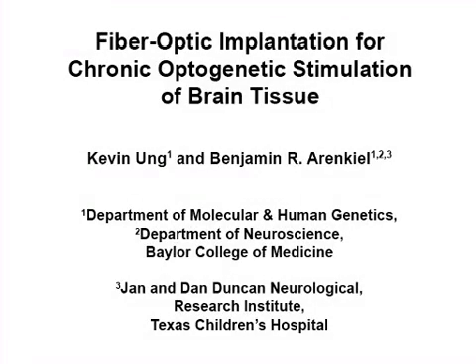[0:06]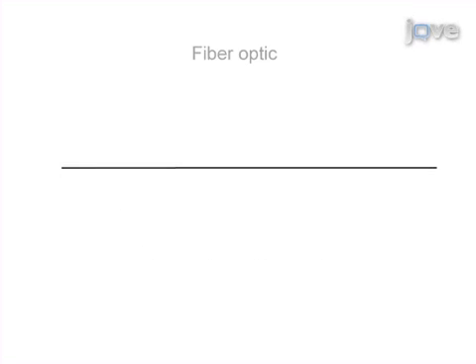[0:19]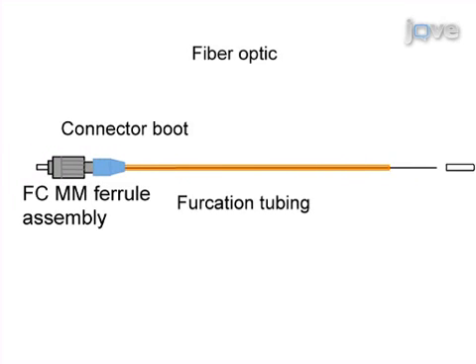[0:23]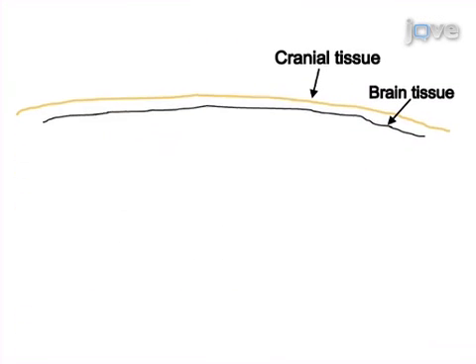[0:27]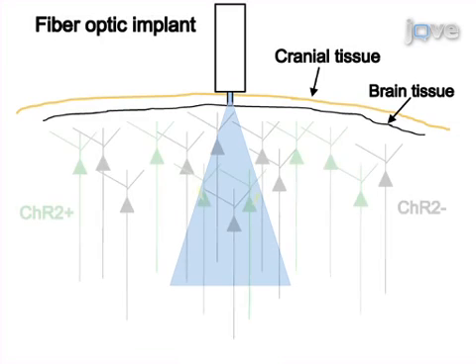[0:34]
The aim of the following experiment is to activate and study neuronal circuits long-term in awake, behaving mice. This method is adapted from the concept originally described in Sparta et al. This is achieved by first assembling a fibre optic coupler cord, which connects the optical rotary joint to the fibre optic implant. Next, the fibre optic is implanted over the brain tissue of interest to create a passage for the light to travel directly to the channel rhodopsin-expressing neurons.
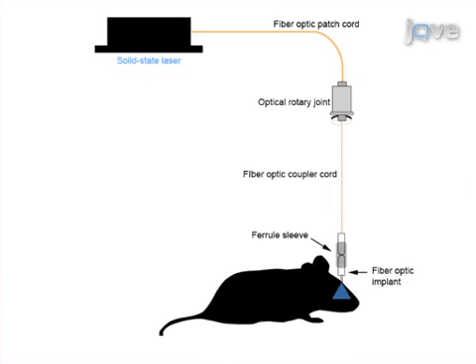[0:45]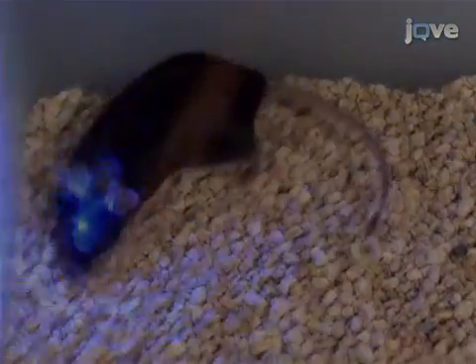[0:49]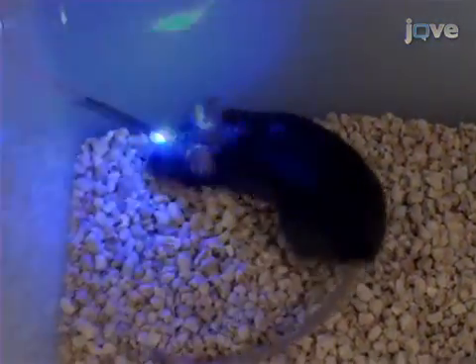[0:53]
Finally, the light source is connected to the optical rotary joint in order to create a serially connected path from the light source to the brain tissue. Ultimately, light-induced firing of channel rhodopsin-expressing neurons can be evaluated based on in vivo electrophysiology and behavioral studies.
The main advantage of this technique over existing methods, like guide cannulas, is that it minimizes the damage to the brain tissue caused by repeated insertion and removal of an optical fiber. Though this method can provide insight into neural circuit function, it can also be applied to other systems to better understand the synapse and circuit-dependent mechanisms that underlie certain types of neurological disorders.
Visual demonstration of this method is critical, as the implantation steps are difficult to master. Each seemingly minor step contributes greatly to the overall stability and reliability of the method.
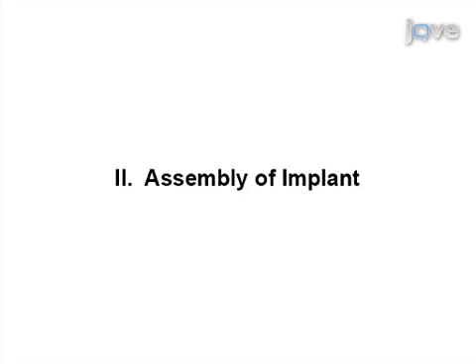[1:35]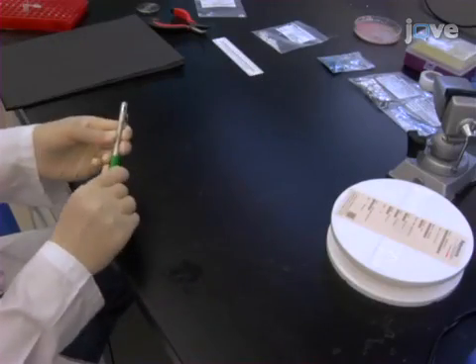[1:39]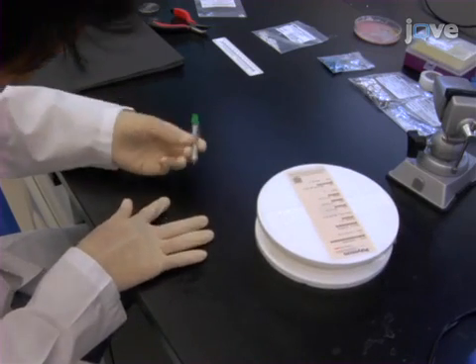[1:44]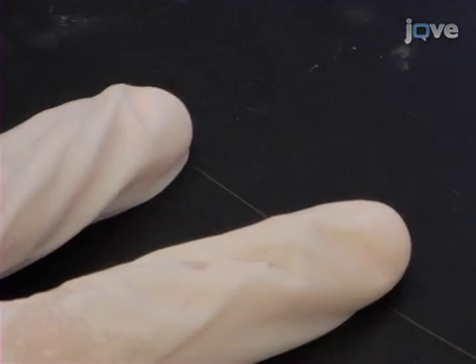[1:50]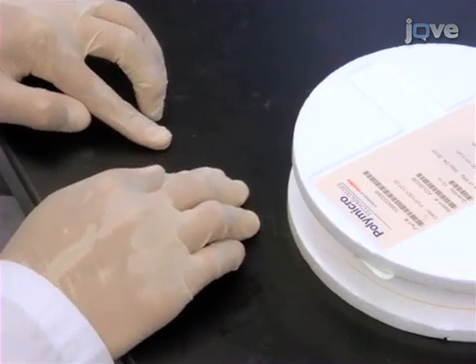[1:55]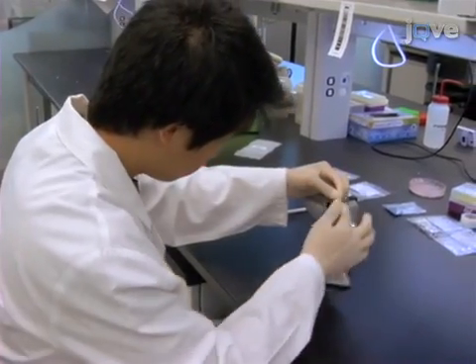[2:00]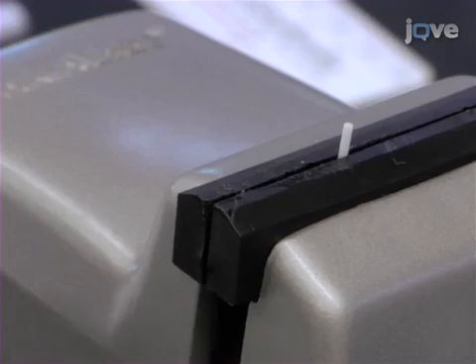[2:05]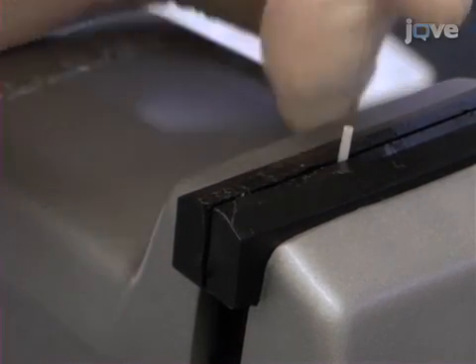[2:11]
Begin by cutting 35 mm of a 125 micron diameter fibre optic with a 100 micron core by positioning a wedge tip carbide scribe perpendicular to the fibre optic and scoring the fibre in a single unidirectional motion, followed by pulling straight out. Now insert an LC ceramic ferrule with a 127 micron inner diameter bore, convex side pointed down, into a vise, and then insert the fibre optic piece into the ferrule. The fibre optic should slide in smoothly and marginally protrude beyond the convex end of the ferrule.
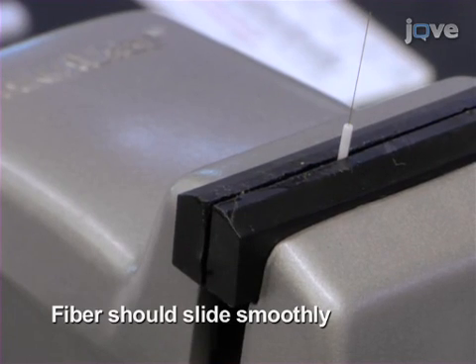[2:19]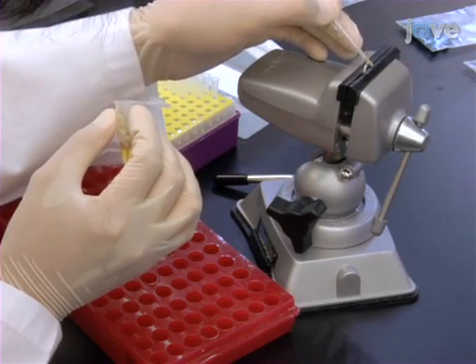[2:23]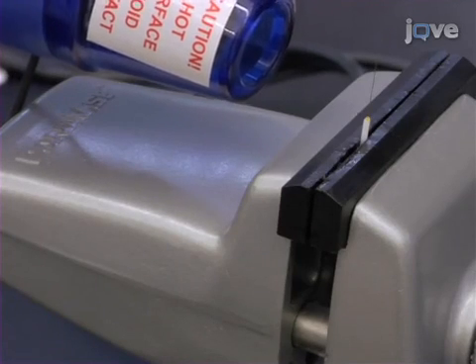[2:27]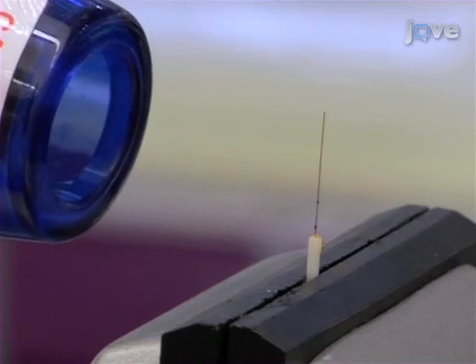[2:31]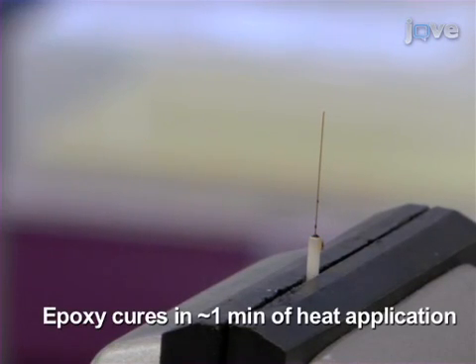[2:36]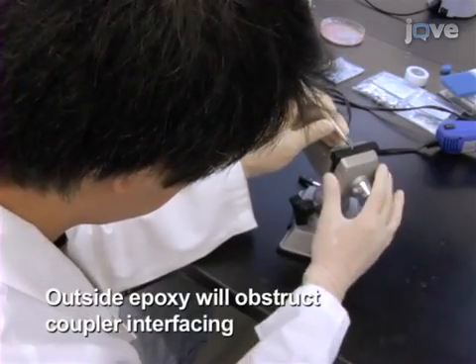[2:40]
Next, apply 1 drop of freshly prepared heat-curable fibre optic epoxy to the flat end of the ferrule, and then apply a heat gun on the epoxy. The epoxy should fill the ferrule as it is heated and is cured when it turns black. After curing, clean any epoxy off the sides of the ferrule.
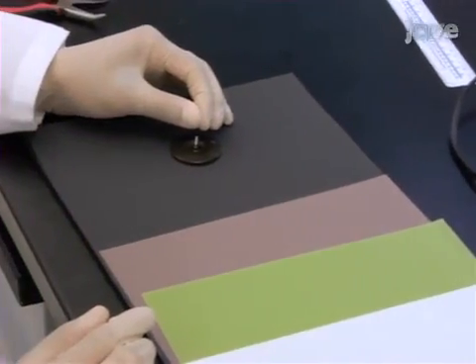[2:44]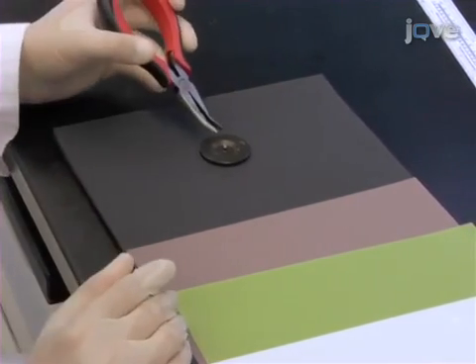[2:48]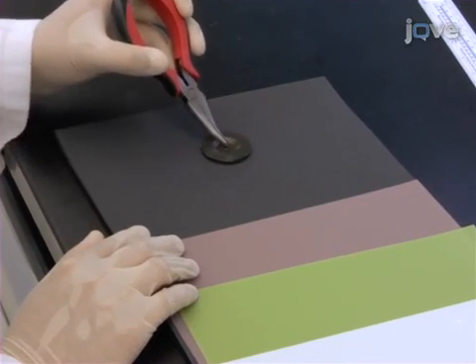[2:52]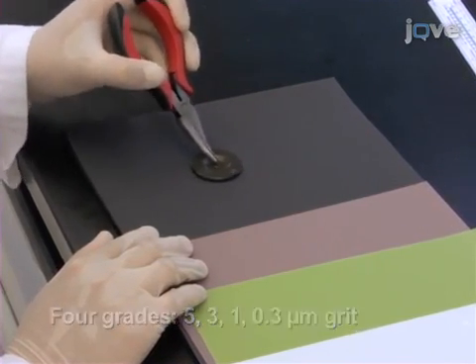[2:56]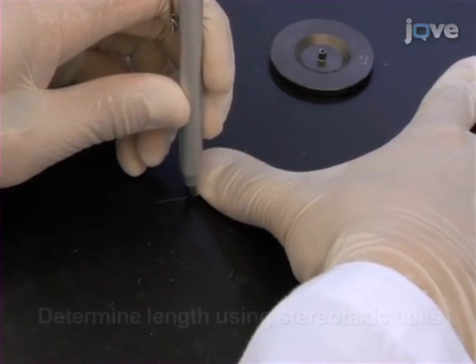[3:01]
Then, using an LC fibre optic polishing disc, make circular rotation patterns to polish the convex end of the ferrule on aluminum oxide polishing sheets on a polishing pad on 4 decreasing grades. Then, cut the fibre optic at the flat end to the appropriate length for targeting the region of interest.
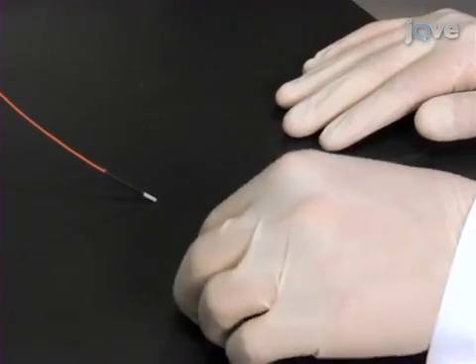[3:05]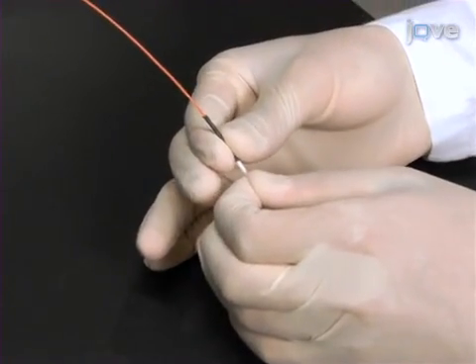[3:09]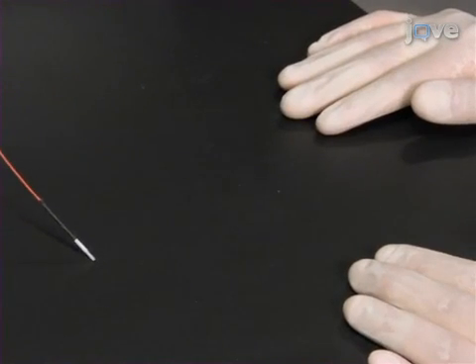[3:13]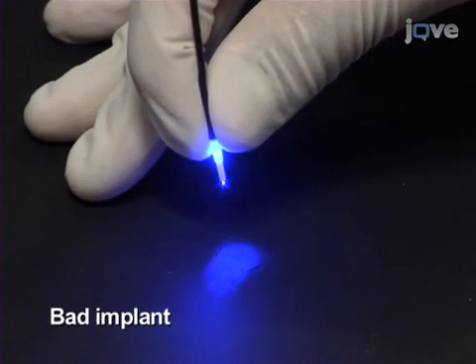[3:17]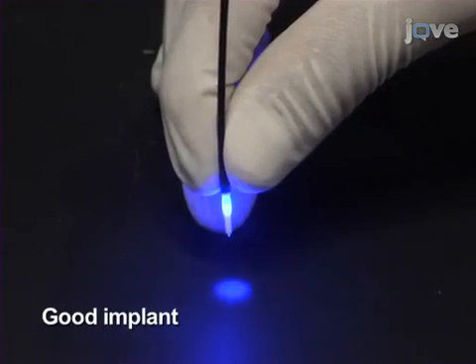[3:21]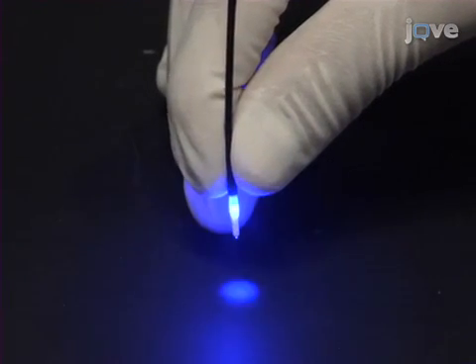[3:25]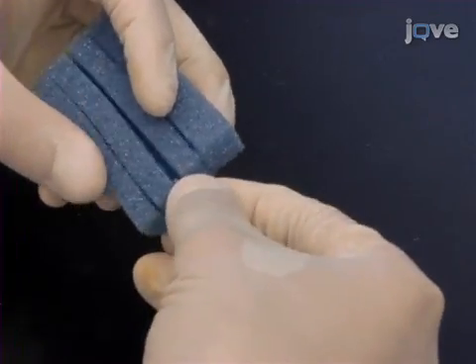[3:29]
To test the polished fibre optic, insert the polished end of the implant into the sleeve of the coupler until direct contact with the opposing ferrule is felt. A bad implant will have a weak focal point near the tip of the fibre optic, whereas a good implant will transmit a smooth concentric circle of light with output powers of up to 10 milliwatts. Store the finished implants in foam until use.
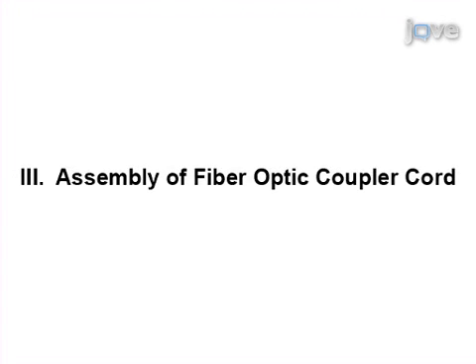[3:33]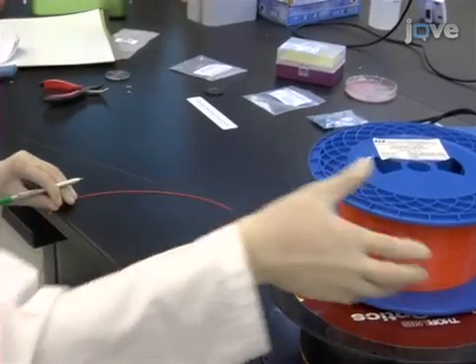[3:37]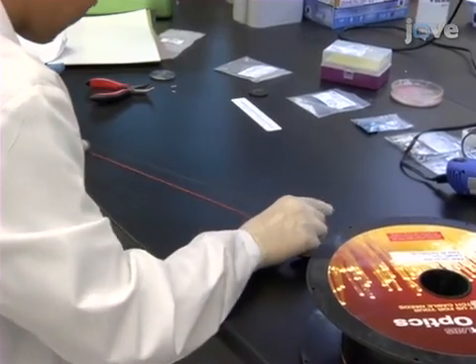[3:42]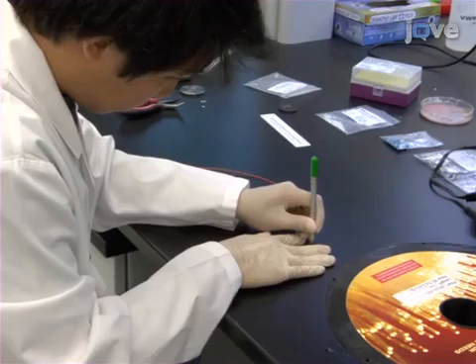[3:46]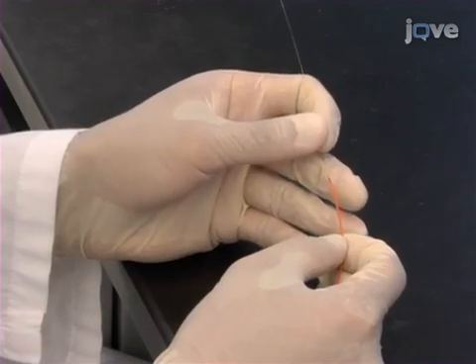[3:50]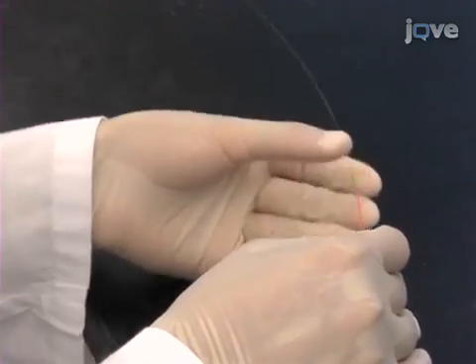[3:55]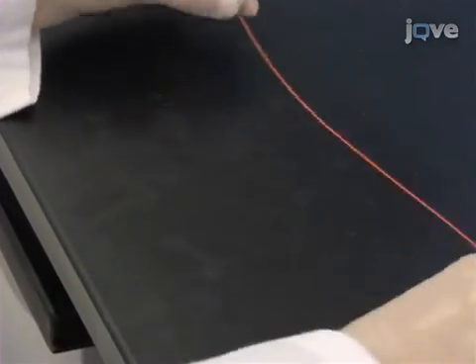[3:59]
Begin this step by measuring and then scoring enough 220 micron diameter fibre optic with a 200 micron core to allow a mouse to move freely, but not allow the mouse to chew the fibre. Then, insert the fibre optic into a piece of furcation tubing with an inner diameter slightly larger and a length slightly shorter than those of the fibre optic.
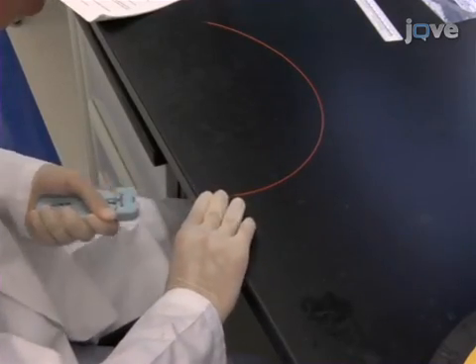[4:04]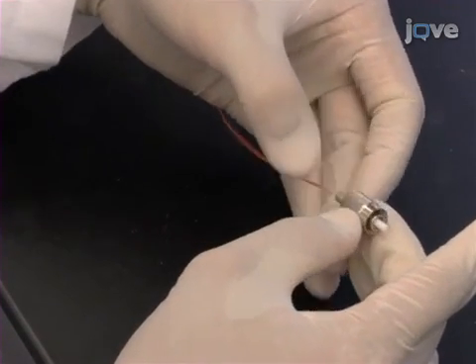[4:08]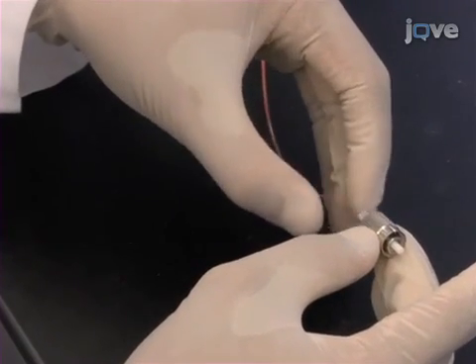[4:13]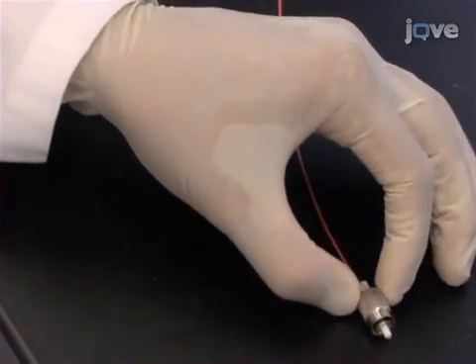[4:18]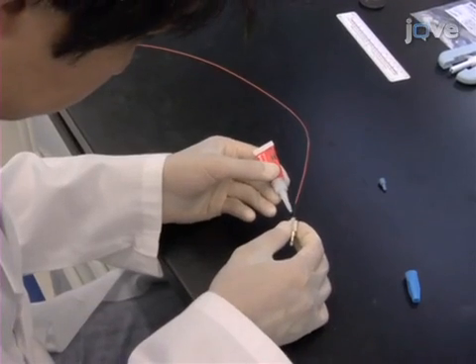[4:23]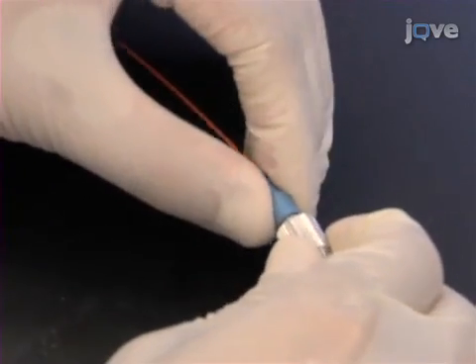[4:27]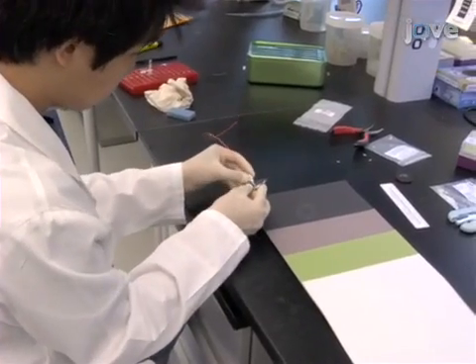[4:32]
Now strip around 25 mm from one end of the fibre optic and insert it into the metal end of a multi-mode FC ferrule assembly with a 230 micron inner diameter bore until it stops. The fibre optic should stick out through the ferrule end. Next, secure the connection with cyanoacrylate at the metal end and cover the connection with a connector boot. Polish the ferrule end with an FC polishing disc as just demonstrated.
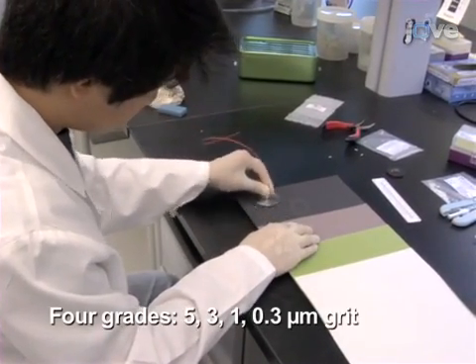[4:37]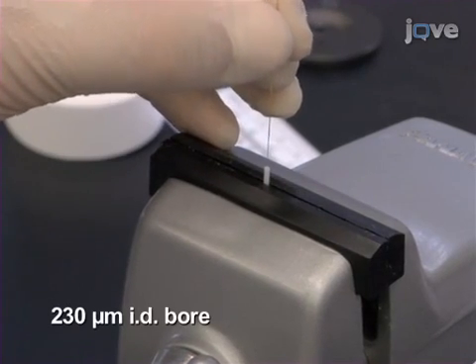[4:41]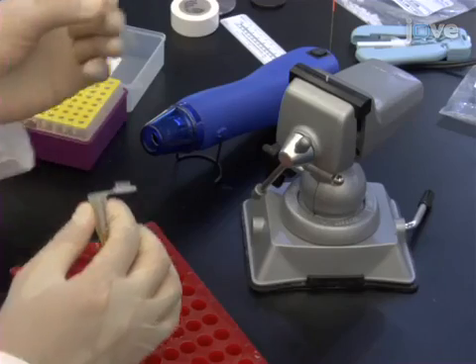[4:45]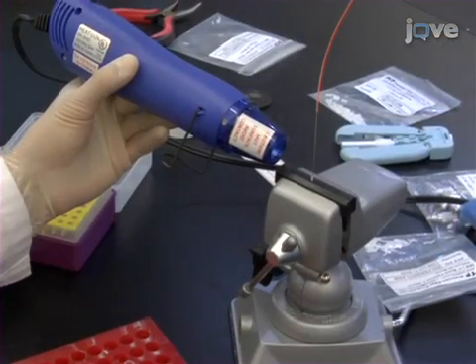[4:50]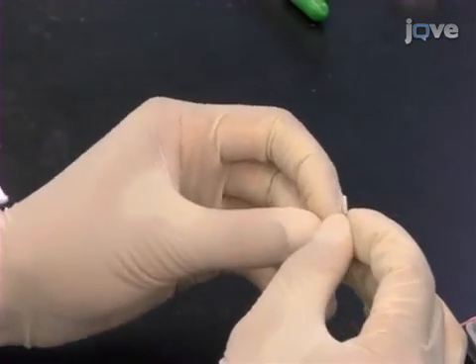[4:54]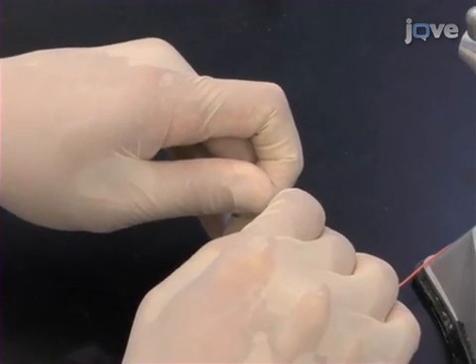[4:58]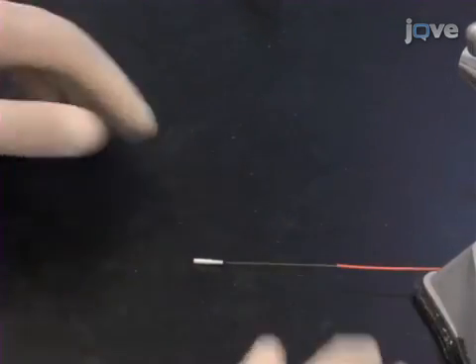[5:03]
After stripping the other end of the fibre optic, insert it into an LC ceramic ferrule with just the convex end distal. Then apply a drop of epoxy to the flat end and heat until cured as just demonstrated. After polishing the convex end of the ferrule, as just demonstrated, slide an LC ferrule sleeve over the convex end of the ferrule until the ferrule reaches the midpoint of the sleeve.
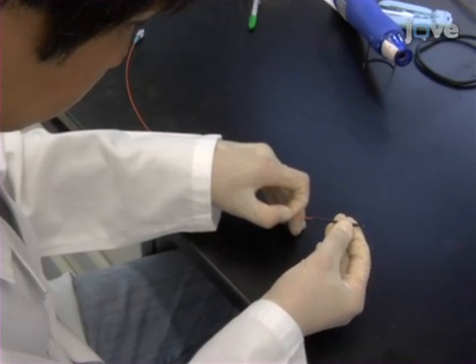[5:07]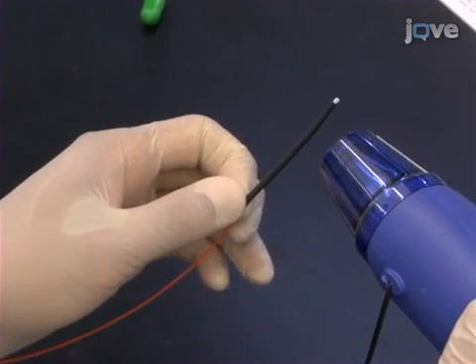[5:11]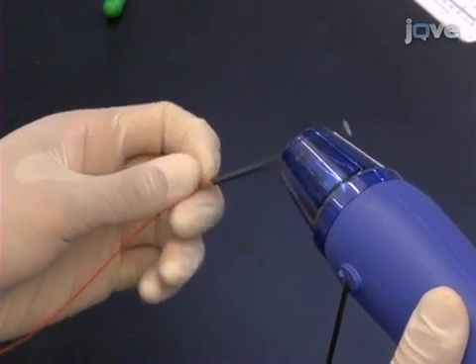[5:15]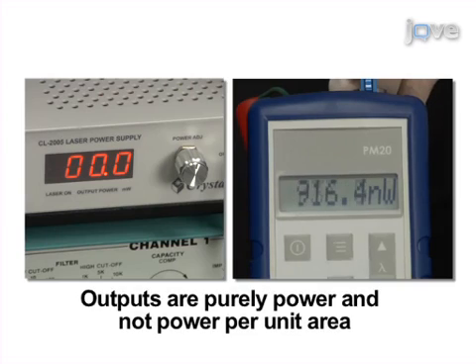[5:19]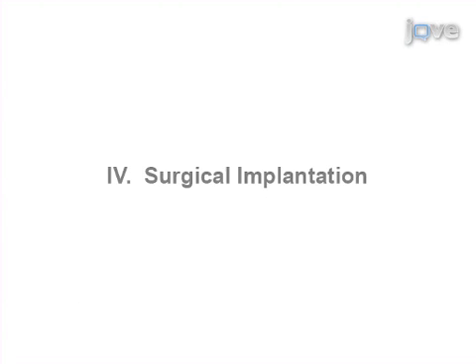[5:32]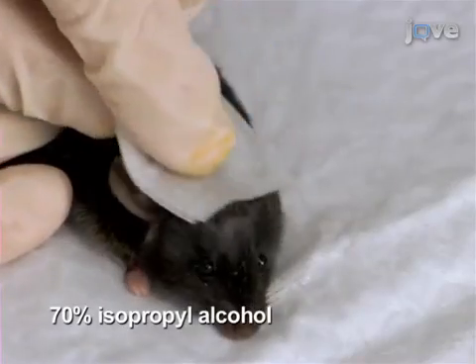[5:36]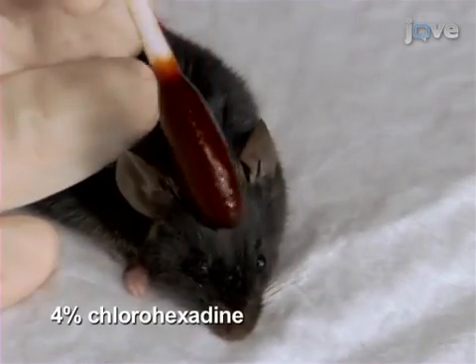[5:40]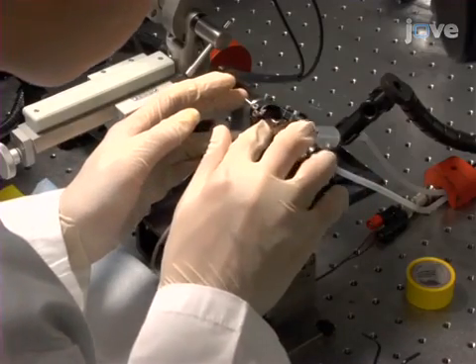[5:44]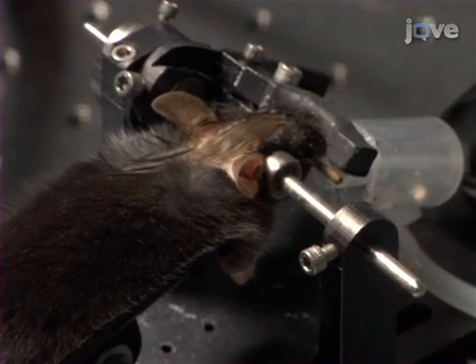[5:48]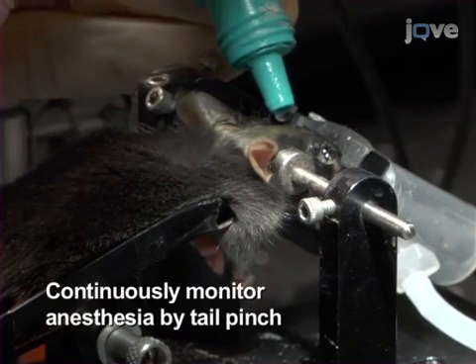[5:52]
Before beginning the surgery, disinfect the surgical area with isopropyl alcohol followed by chlorhexidine solution. Next, place the mouse in the stereotaxic rig and secure the head, ensuring that the skull is level. Apply ophthalmic ointment to the animal's eyes to prevent dryness and post-operative pain.
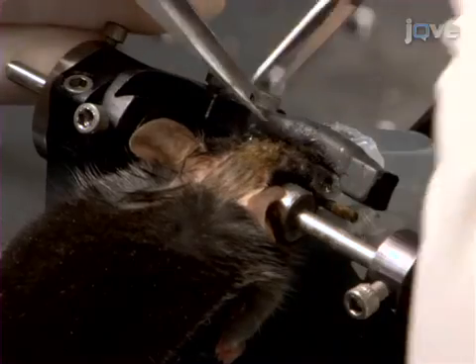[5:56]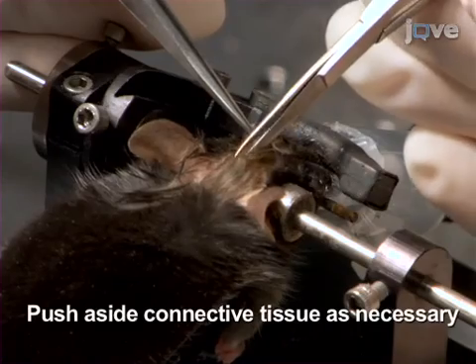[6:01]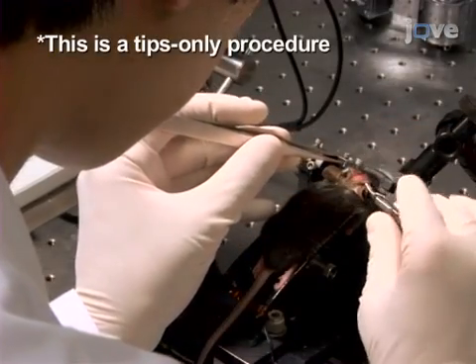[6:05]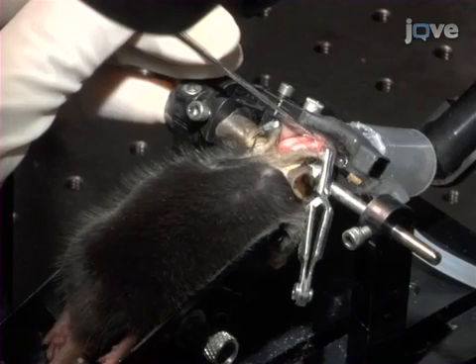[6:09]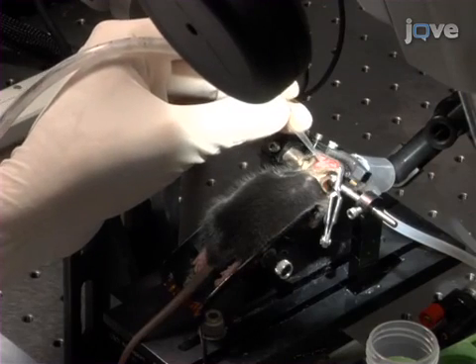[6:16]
Now make an incision through the midline of the scalp to expose the cranium from the eye orbits to the lambda suture. Use serrefine clamps to hold back the skin and maintain access to the cranium. Then use a dental pick to etch a checkered pattern throughout the surface of the cranium. Wash away the resulting debris with sterile saline.
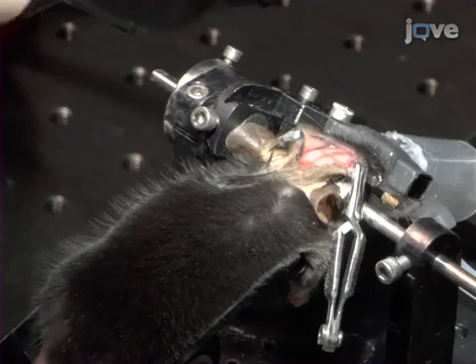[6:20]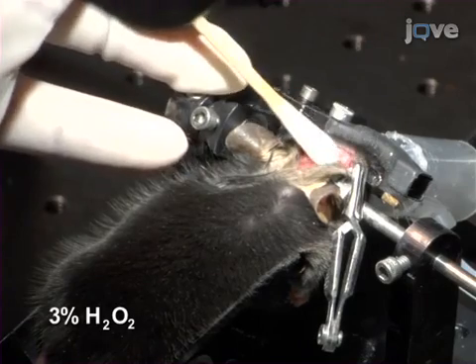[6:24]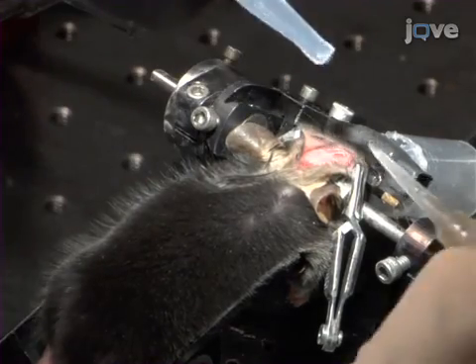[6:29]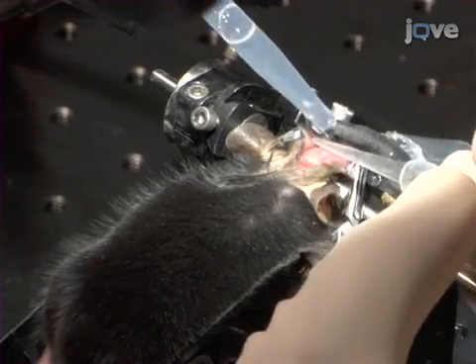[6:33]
After drying thoroughly, use a cotton swab to apply 3% hydrogen peroxide to the exposed cranium for around 2 to 3 seconds to create micropores. Then, wash the skull multiple times with more sterile saline and dry it thoroughly.
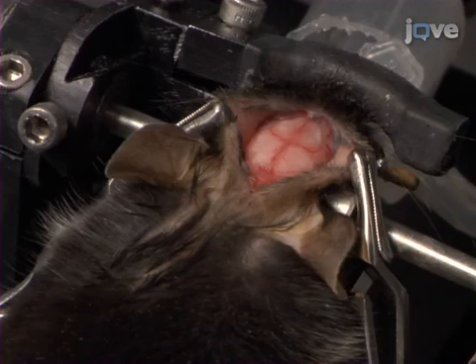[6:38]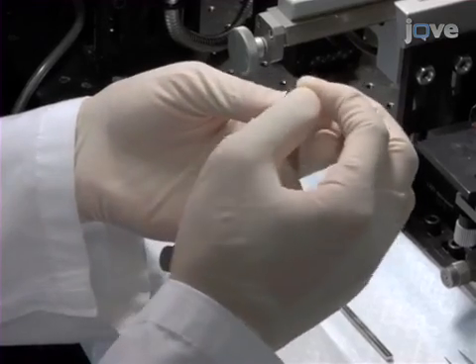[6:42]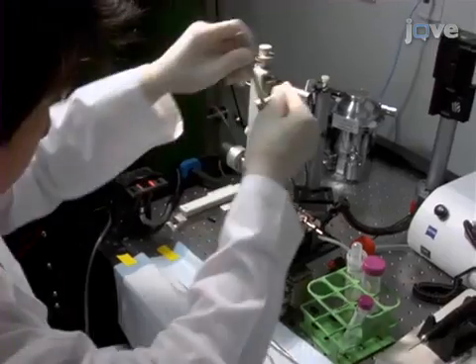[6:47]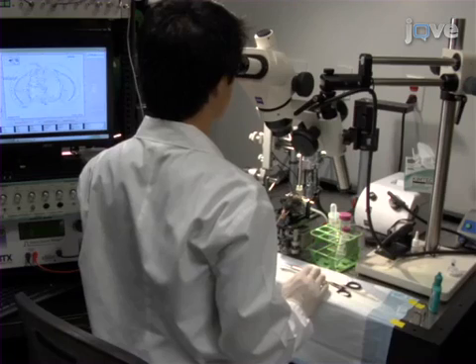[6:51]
After etching, washing, and drying the checkerboard pattern into the cranium again, insert the fibre optic ferrule implant into the probe holder and then connect it to the stereotaxic arm. Determine the burr hole location with a stereotaxic atlas calibrated to bregma and lambda.
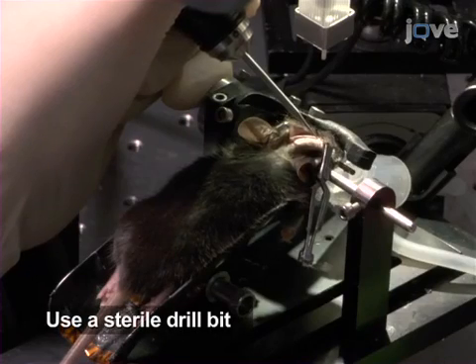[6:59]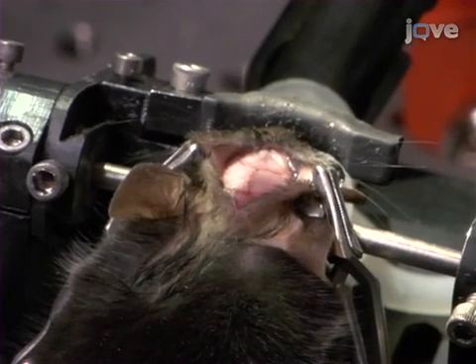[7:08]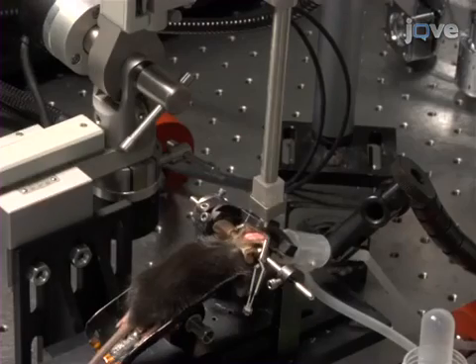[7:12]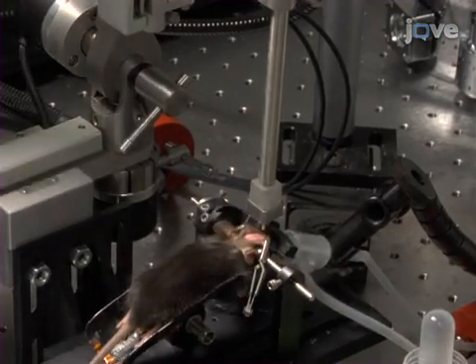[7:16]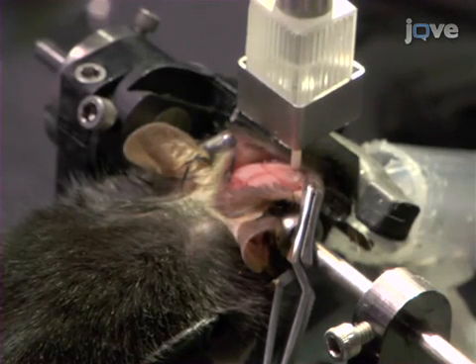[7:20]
Then use a rotary dental drill to make a small burr hole craniotomy less than 1 mm in diameter above the region of interest, being careful not to break the dura or damage any tissue. Using the stereotaxic arm, position the implant in place directly above the region of interest. The ferrule should rest on the surrounding cranial tissue.
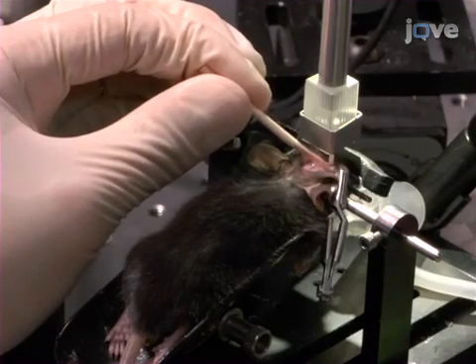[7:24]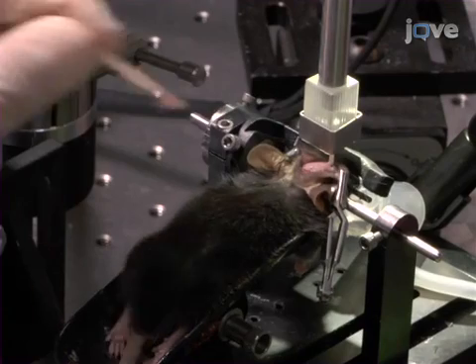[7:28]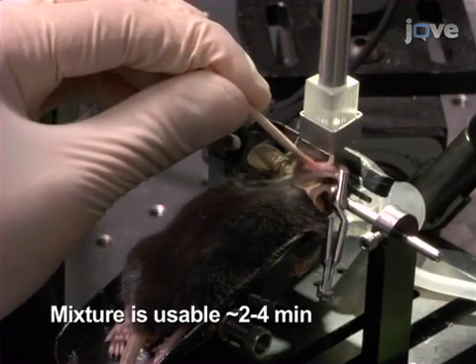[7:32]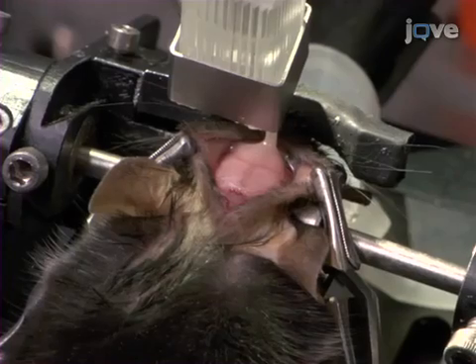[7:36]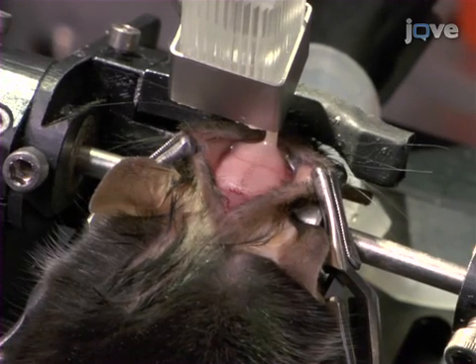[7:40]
Now use a sterile toothpick to apply a thin, even layer of freshly prepared dental cement across the cranium and onto the lower portion of the implant, being careful not to come into contact with the skin of the animal. The base layer of dental cement should cover as much surface area on the cranium as possible.
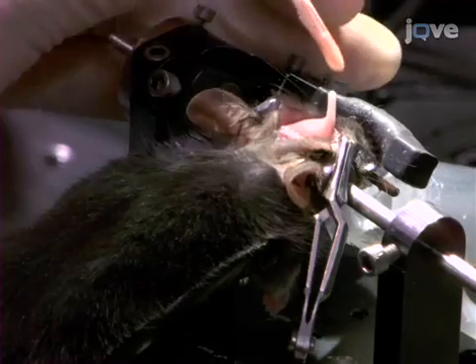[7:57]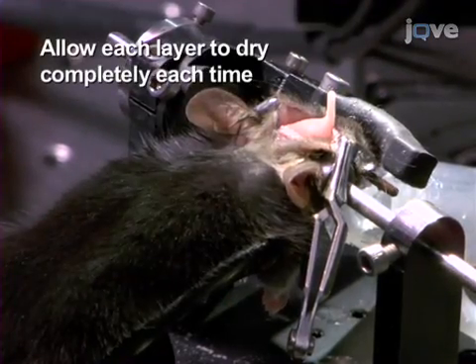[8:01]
The most difficult aspect of this procedure is applying the dental cement without it touching the mouse's skin. To ensure success, apply small amounts of cement at a time in thin layers and wait for each layer to completely dry before adding the next one. Apply even layers of the dental cement to form a small mound on top of the cranium and around the implant.
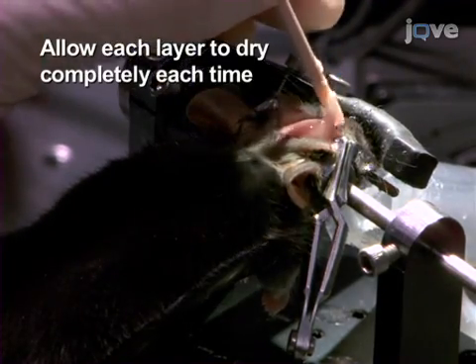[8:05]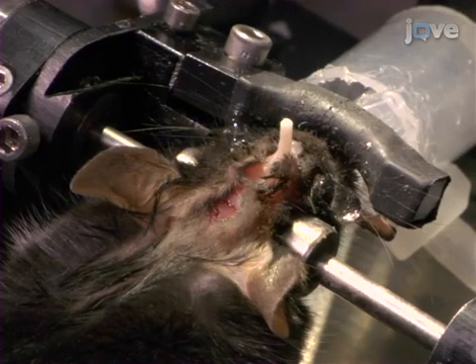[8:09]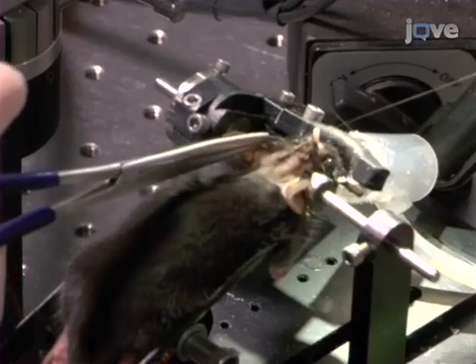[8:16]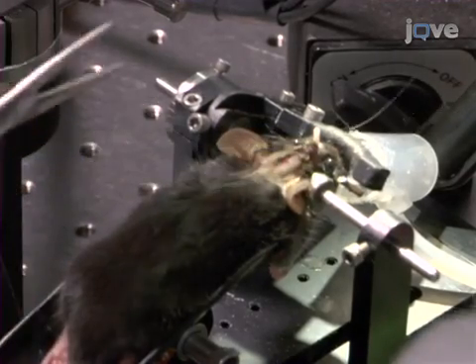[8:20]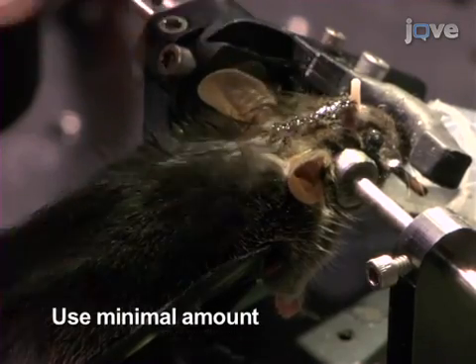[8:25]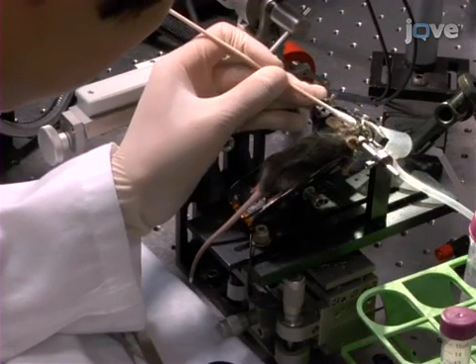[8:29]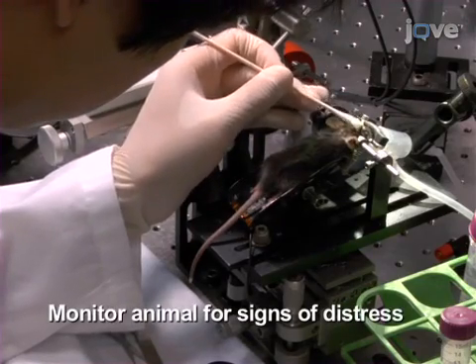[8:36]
Leave around 3 to 5 mm of the convex end of the ferrule clean of cement to allow for a smooth, unobstructed connection. Then suture the scalp over the mound of dental cement and around the implant. Vet bond adhesive can be used for additional binding after suturing. Finally, apply topical analgesics and antibiotics to the sutured skin and around the base of the implant, and then place the mouse in a cage for post-operative recovery.
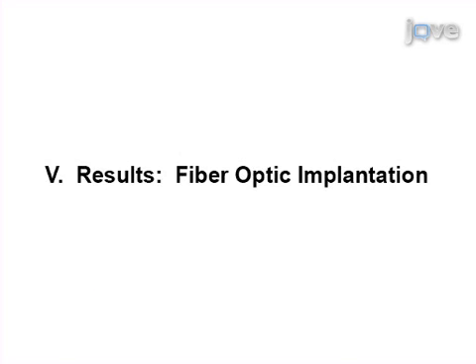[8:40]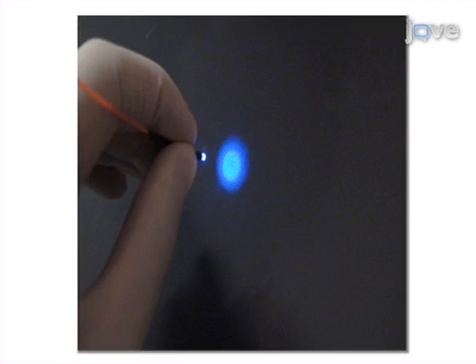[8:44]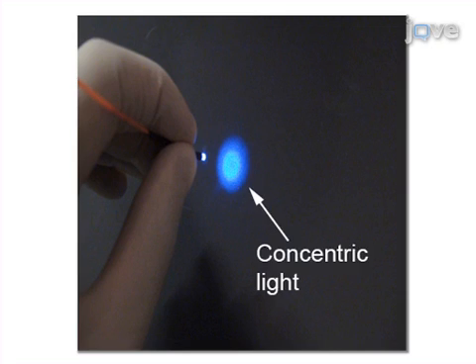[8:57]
Proper assembly of the fibre optic implant and coupler results in minimal photon loss between the light source and the end of the fibre optic in the region of interest. Well-polished fibre optics should transmit light in a uniform concentric circle, similar to the circle shown here.
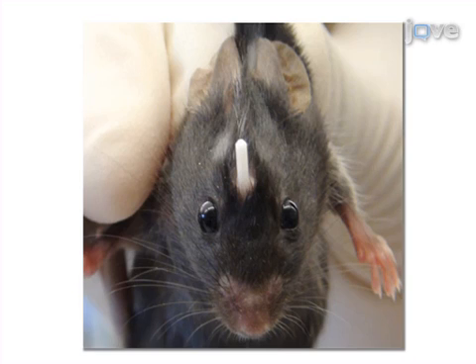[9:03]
As can be seen in this image, with careful implantation and suturing, the implant causes no visible irritation to the mouse, and can remain in place for long-term studies without any significant degradation of the fibre optic or to the amount of light transmitted.
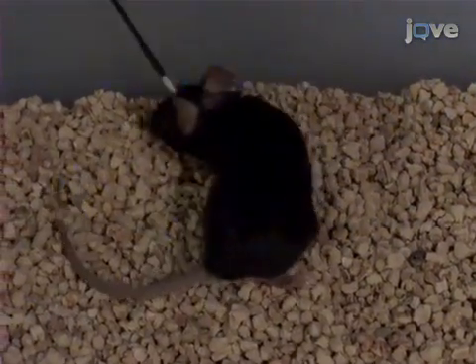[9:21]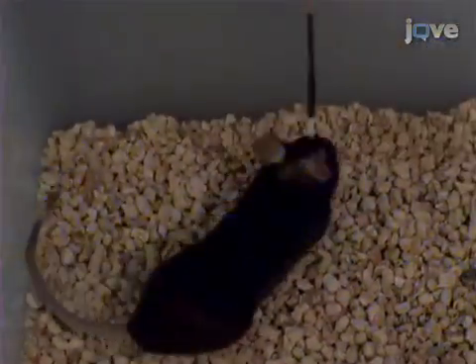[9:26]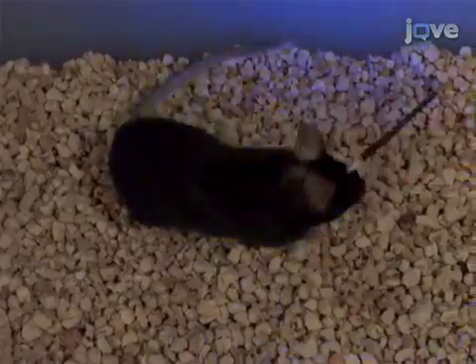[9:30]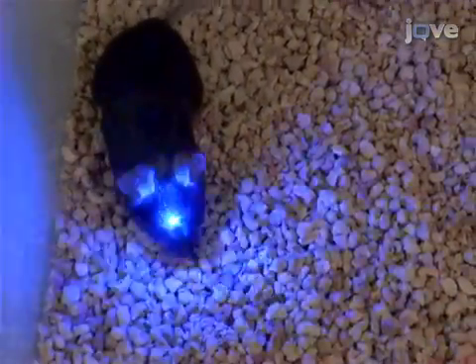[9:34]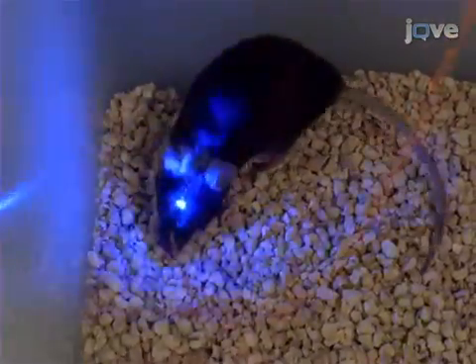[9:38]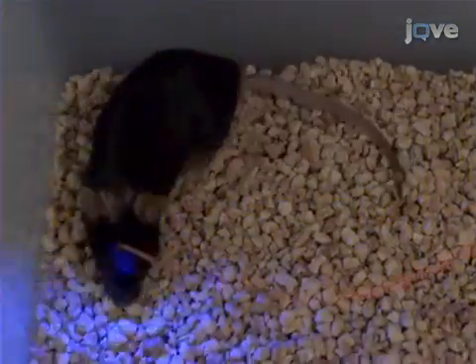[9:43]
Functional behavioural assays in an awake mouse show a direct response from stimulation through a fibre optic implanted over the motor cortex, as evidenced by this in vivo electrophysiology video data showing the activation of targeted neurons through the implant and the behavioural response of the animal during brain stimulation.
Following this procedure, other methods like photostimulation of targeted brain regions can be performed in order to answer additional questions, such as what are the patterns of circuit connectivity associated with the target cells. After watching this video, you should have a good understanding of how to assemble fiber optic implants and coupler cords, and how to implant them over brain tissue expressing optogenetic reporters.